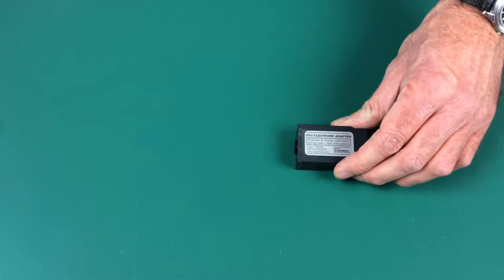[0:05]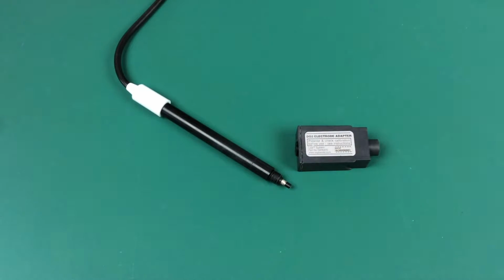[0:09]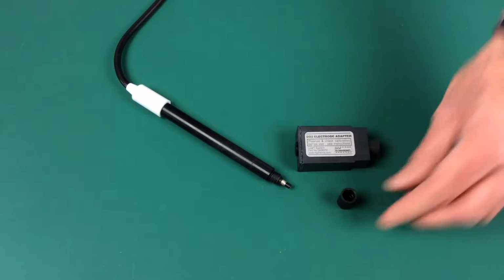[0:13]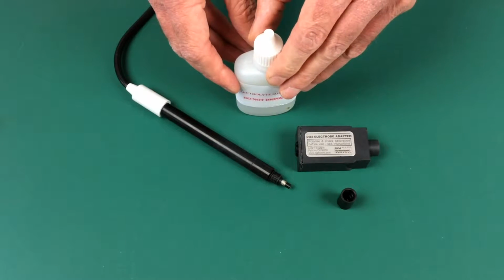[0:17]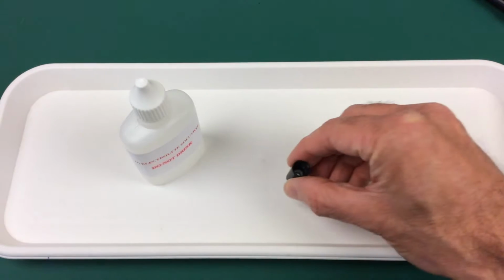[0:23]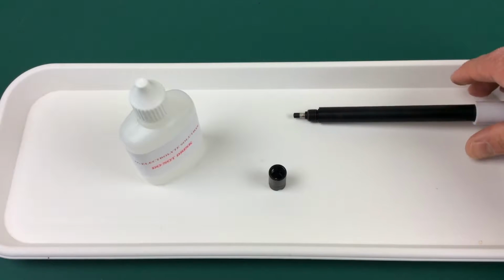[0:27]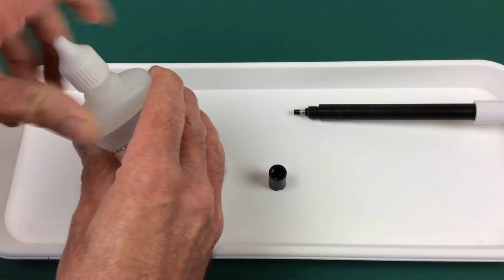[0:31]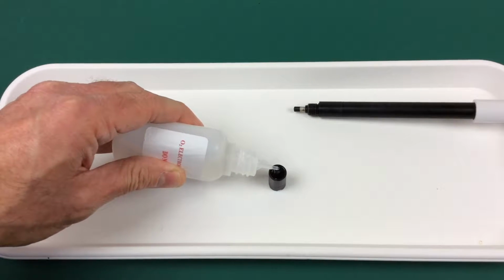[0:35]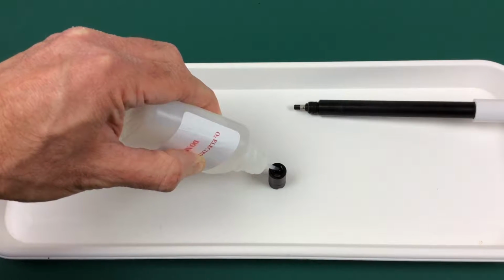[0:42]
The LogIT Dissolved Oxygen probe consists of an adapter, the probe, the membrane housing and electrolyte solution. To calibrate, we're going to use the electrolyte solution, the membrane housing and the probe. What you do is you gently fill the membrane housing with the electrolyte. Now the trick is to put it in slowly so as not to get too many air bubbles trapped against the thread inside the housing.
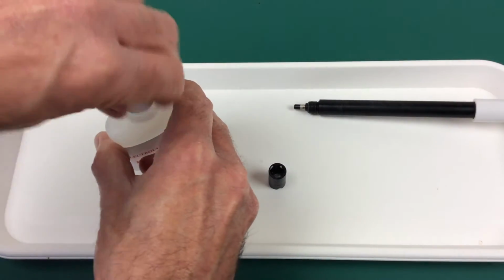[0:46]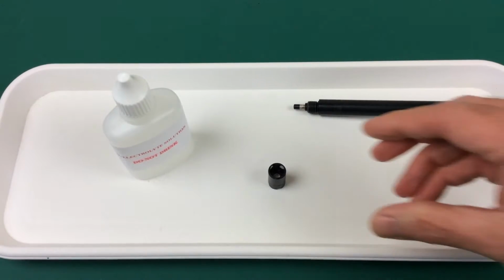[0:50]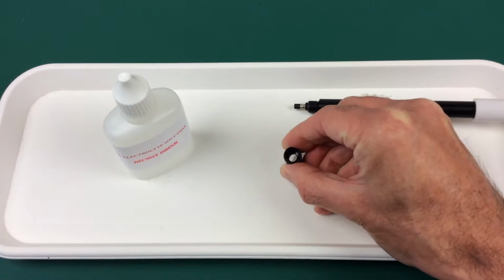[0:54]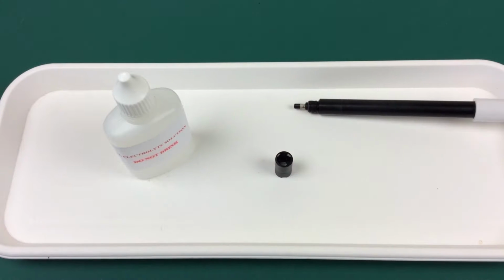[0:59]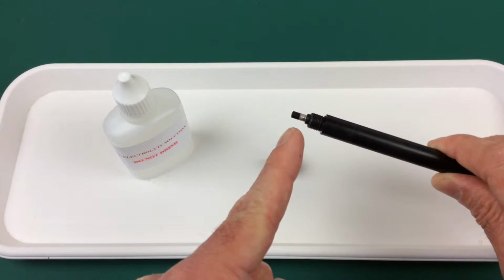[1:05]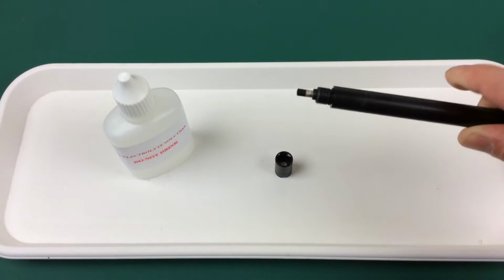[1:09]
Now if there are some bubbles inside the housing, we've got one in there, just give it a gentle tap until all the bubbles are out, and then take the probe and just check the anode and cathode on the end, the metal bits, and make sure they're nice and shiny. If they're not, then just give them a clean with the crocus paper supplied.
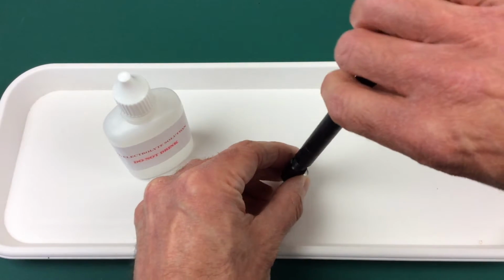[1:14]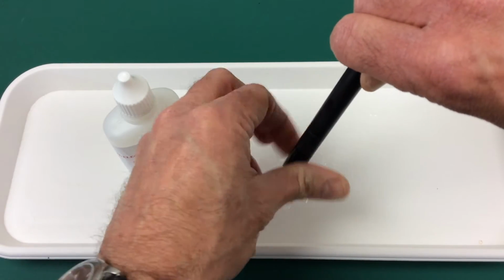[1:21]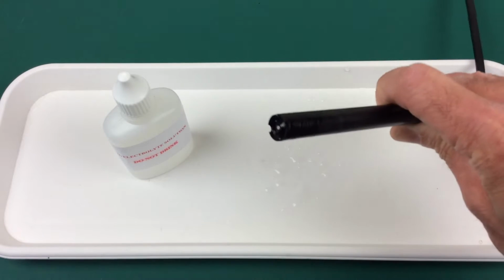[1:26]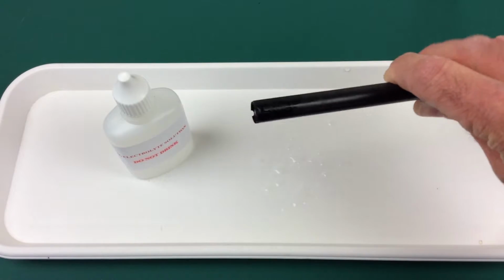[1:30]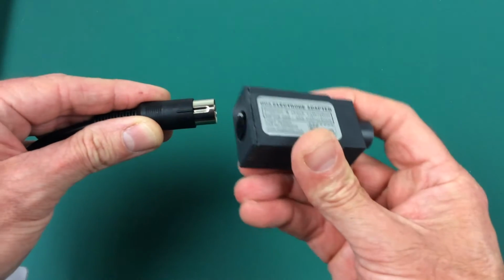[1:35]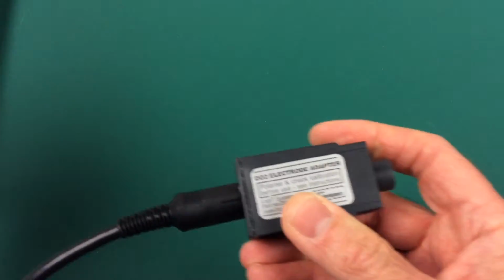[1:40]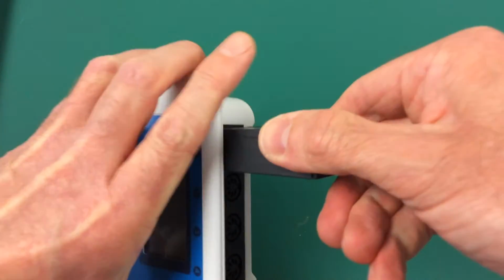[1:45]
Now again, gently screw the membrane housing onto the end of the probe. You don't need to do it up too tight. And then just check the end and make sure that the membrane isn't too stretched. It should poke out but not too much. Then connect the probe to the adapter, and then connect the adapter to a suitable LogIT data logger. In this case we're using the LogIT Observer.
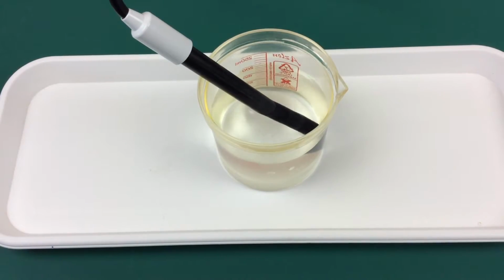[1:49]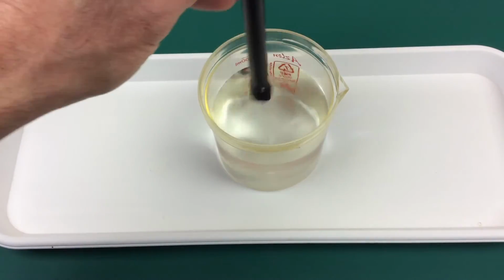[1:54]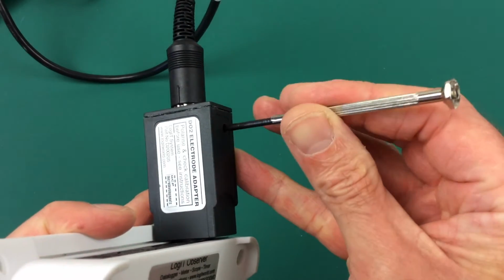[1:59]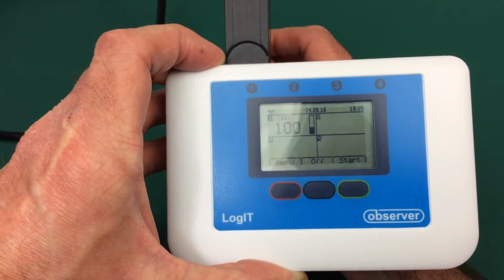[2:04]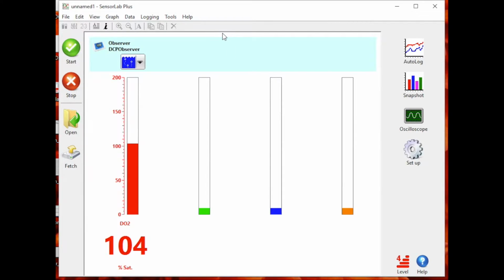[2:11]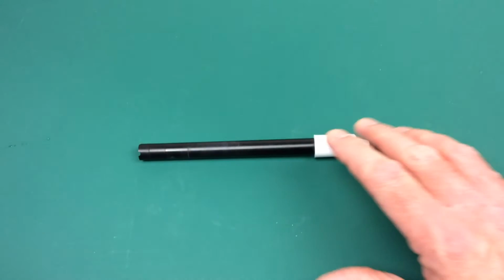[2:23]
Switch the data logger on and allow the probe to polarize for between 10 to 15 minutes, keeping the logger on. And then to calibrate, stir the probe in the water, insert a screwdriver into the calibration pot and adjust to 100% saturation. Once you have a stable reading, it's calibrated. You can do it with software, and again, check that you get 100% saturation. Once it's at 100% with a constant stirred probe, it's good to go.
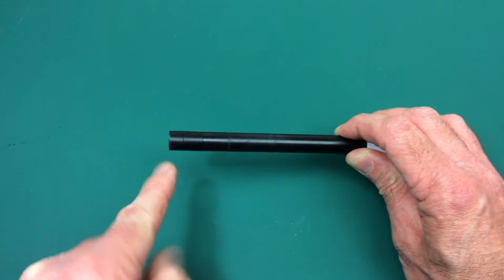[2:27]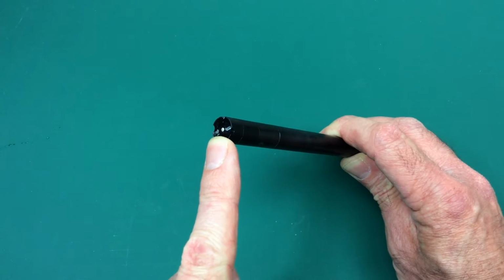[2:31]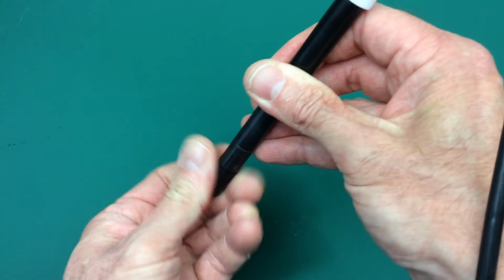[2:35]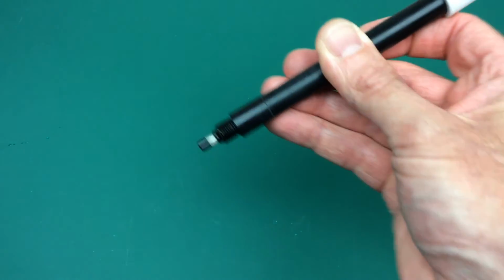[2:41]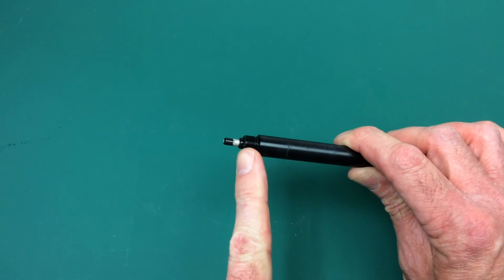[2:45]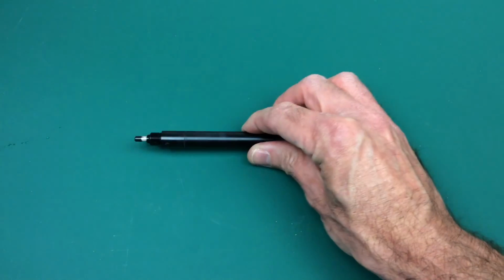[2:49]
If you find you can't achieve a stable reading, the problems usually lie with the membrane. Now, it could be split, it could be damaged if it's been used in a pond and hit the bottom and it's been cut on a sharp stone, so you may need to remove and replace the membrane with a new one. And again, if you can't calibrate, check that the anode and cathode are nice and shiny and clean if necessary.